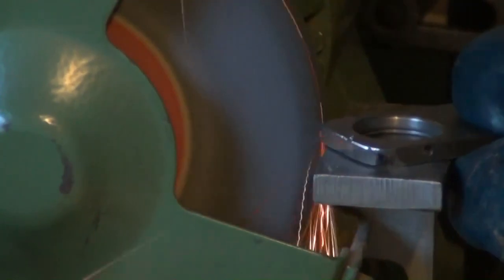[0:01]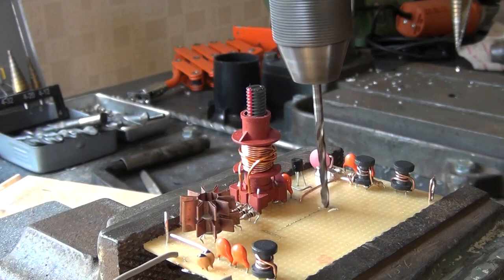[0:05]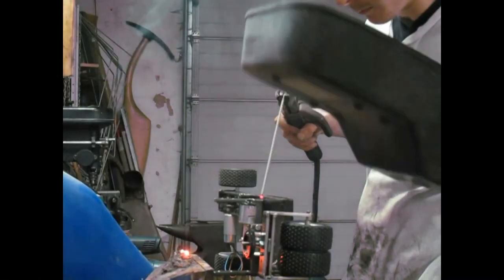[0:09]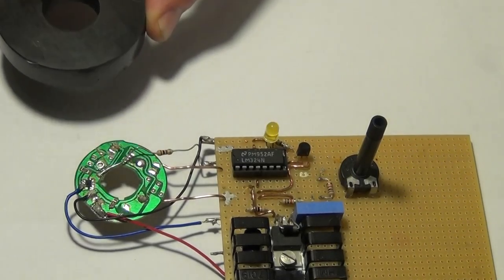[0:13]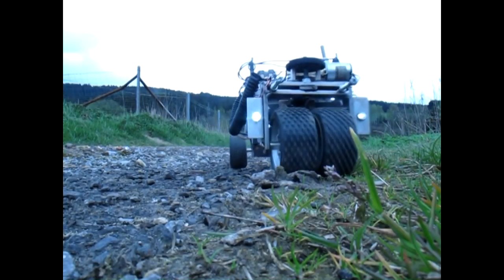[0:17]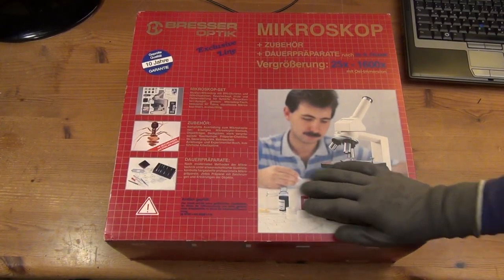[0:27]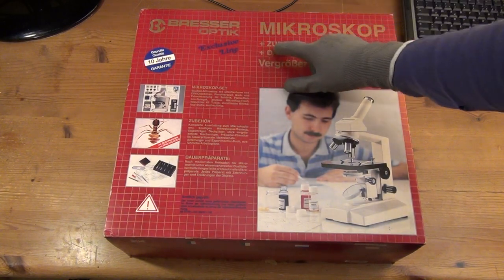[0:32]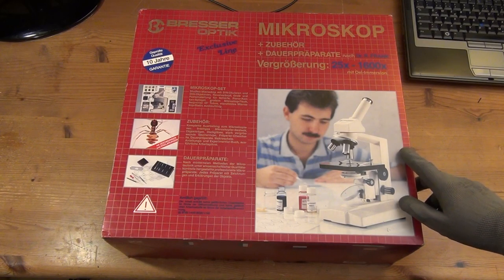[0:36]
Hello friends. Today's episode is another proof of concept video involving the Raspberry Pi. Now, what is it about? Well, many of you sure know these USB microscopes here that are very cheap by now, but are often very poorly made and often deliver low resolution, low quality video material.
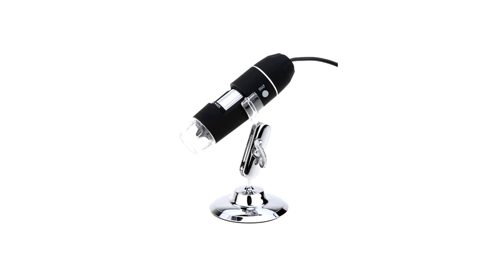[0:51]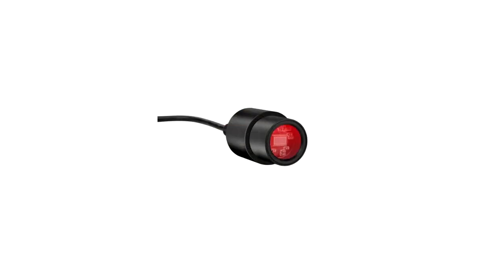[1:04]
On the other hand, there are also so-called digital microscopes, which already come with a camera and even a display. Also, by now, professional microscope manufacturers offer these modules here that can be used instead of a classical eyepiece with older microscopes, basically upgrading them to a digital microscope and delivering HD video quality, as you will see later in this video.
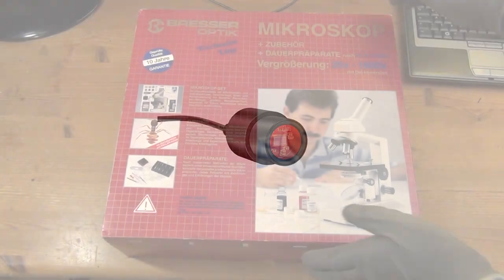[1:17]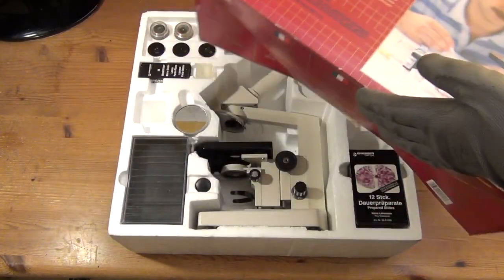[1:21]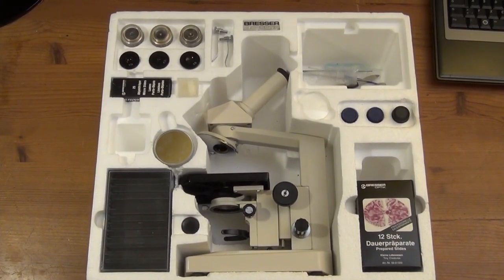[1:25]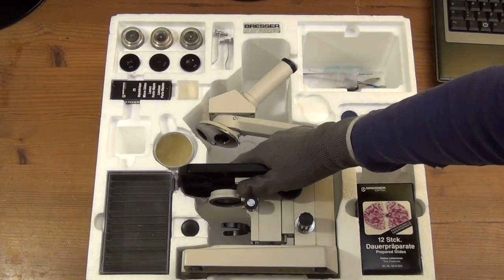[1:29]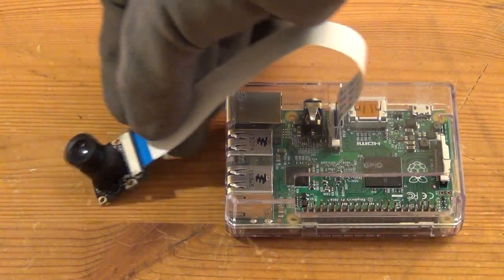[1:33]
So in this video, I'm attempting a DIY approach to this whole topic, buying a microscope for very little money that has a reasonable build quality though, and upgrading that to a digital microscope by using a Raspberry Pi computer and a camera module that was specifically designed and is sold as a peripheral device for the Raspberry Pi.
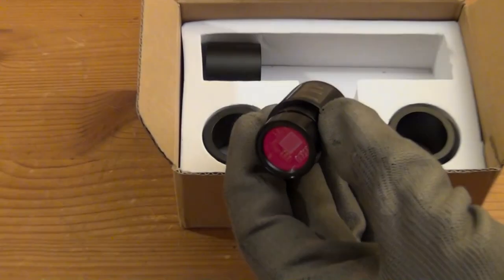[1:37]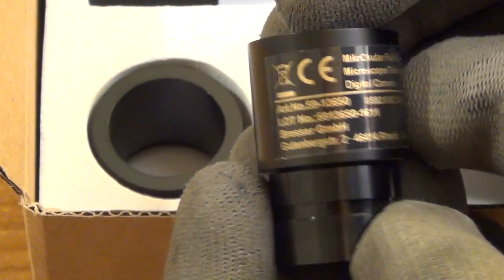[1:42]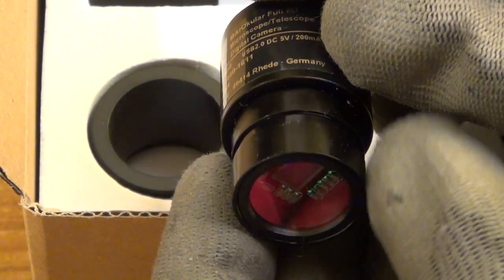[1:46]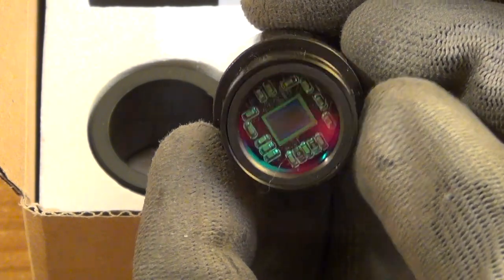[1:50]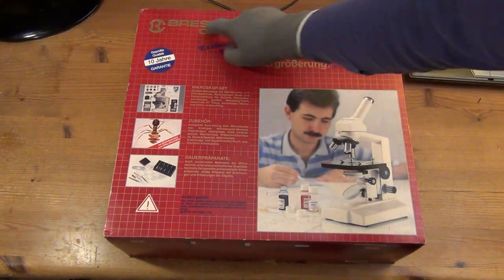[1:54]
And in order to allow for a direct comparison between this self-made approach and a commercial solution, I have also ordered one of these eyepiece USB cameras here, and we will take a look at the actual footage later in this video. But first, let us take a brief look at the actual microscope that I bought for this video.
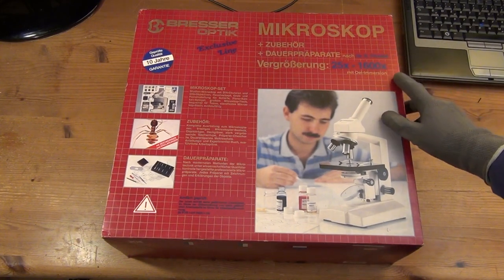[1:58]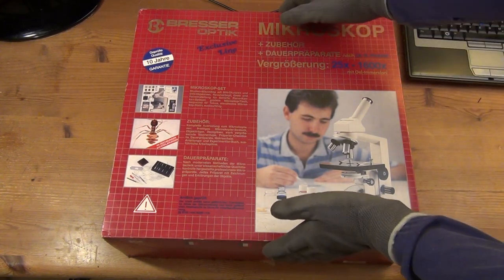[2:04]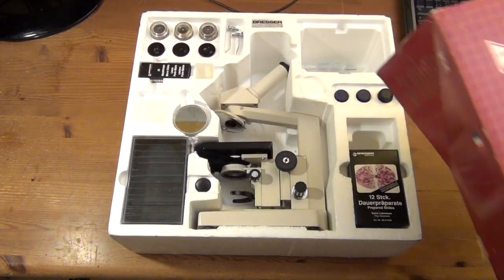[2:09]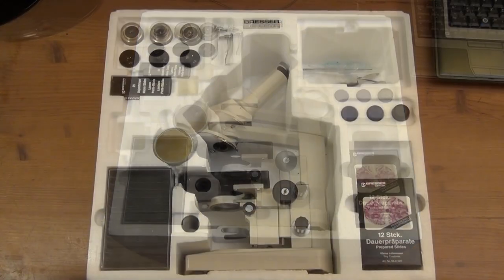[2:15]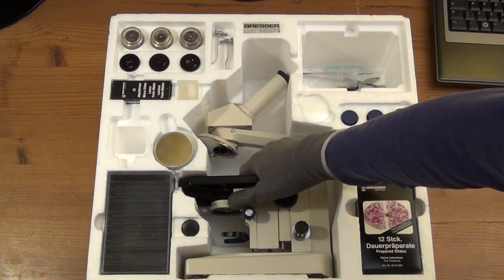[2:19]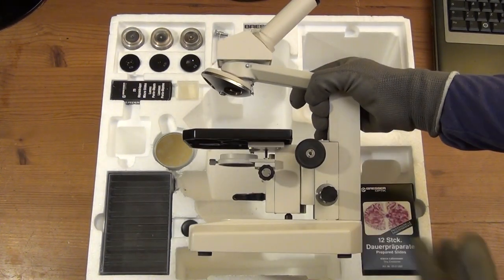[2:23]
So, I got this entire set here for only 5 euros just the other day here in Cologne. And, well, you might pay up to 50 euros for something like this. And I guess that this microscope, which was manufactured by the German company Bresser, might be from around the early 1990s. And I guess that it would have cost something around 150 euros in today's money, that is, back in that time.
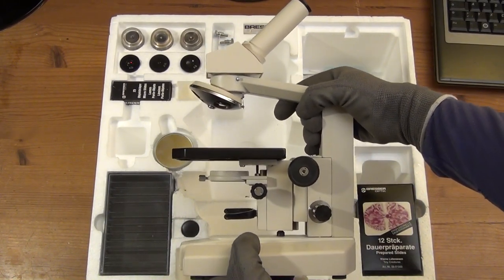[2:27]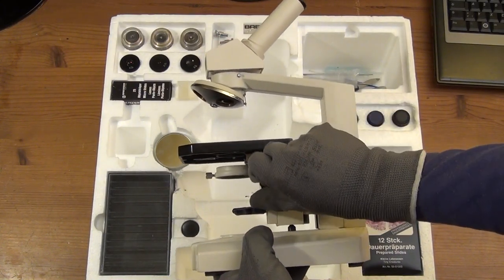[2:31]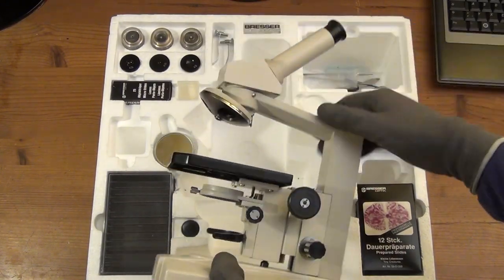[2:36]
But even if you're not as lucky as I am with these kind of deals, I guess you can get an older microscope for around 20 euros at basically any time. And if you're a little patient, you might get it as cheap as just a few bucks.
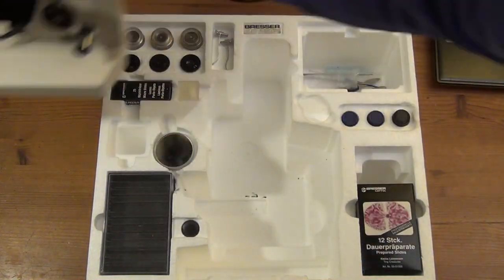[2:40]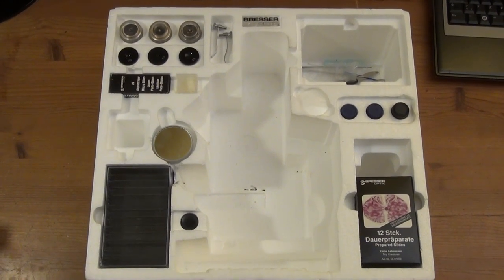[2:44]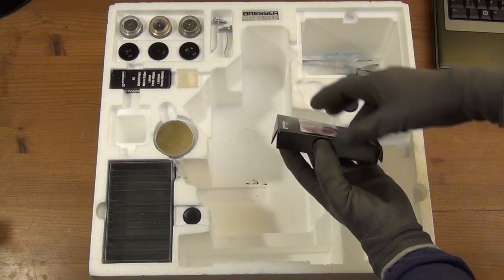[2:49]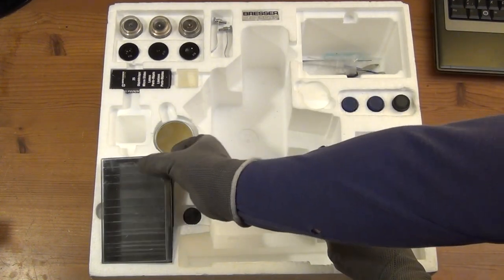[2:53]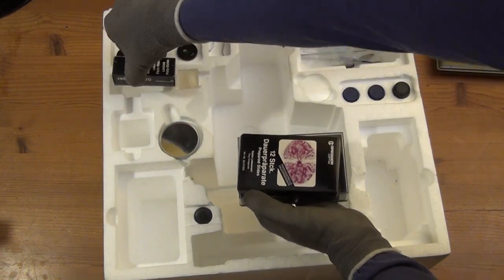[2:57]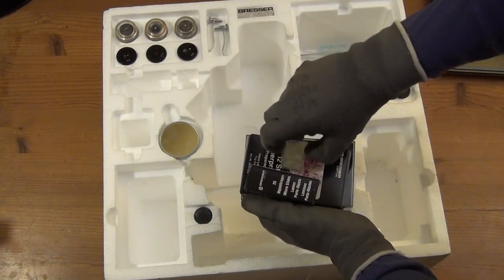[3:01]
And as you can see, this set came not just with the basic microscope frame and some of the optical components, but also some pre-prepared slides with specimens on them, and also all the components for new slides so that you could make your own specimens. But we're not going to focus here on biology or anything like that. You can use a microscope like this just as well for taking a look at microelectronics, for example.
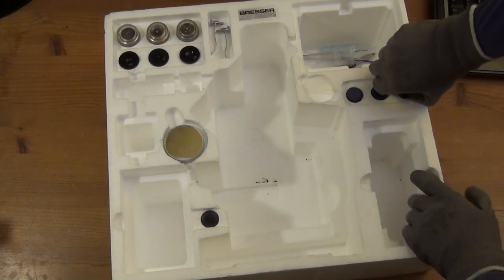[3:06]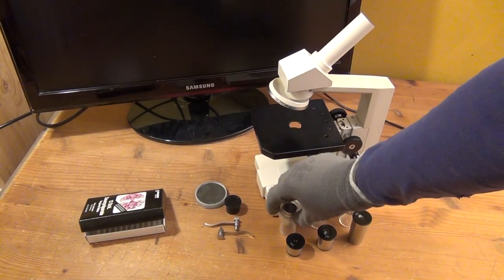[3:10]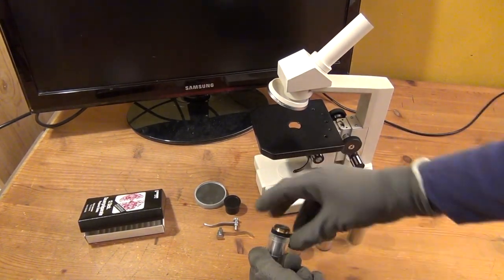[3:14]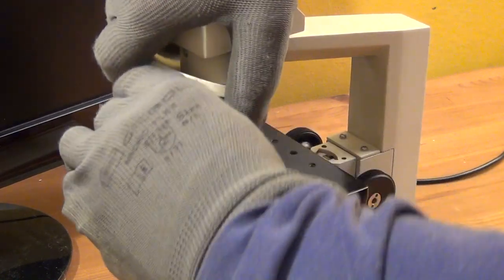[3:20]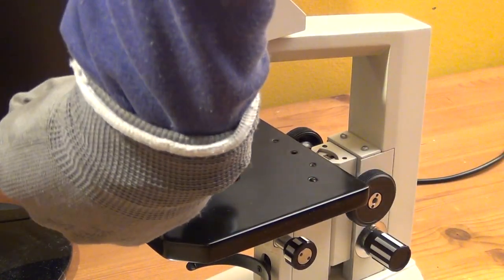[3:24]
The microscope set comes with 3 different objectives or objective lenses, in German Objektive, which are stored in these small transparent plastic tubes here, and then they are attached to the so-called objective turret, in German Revolver. And of course, these 3 objectives have different sizes and different factors of magnification.
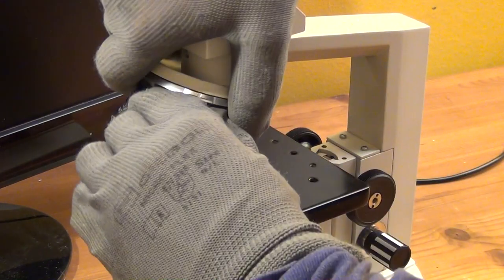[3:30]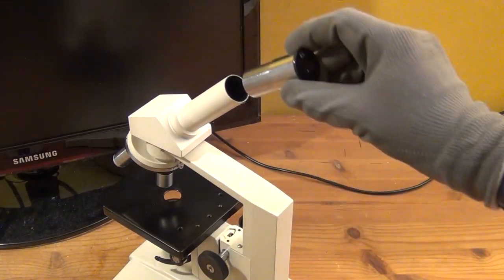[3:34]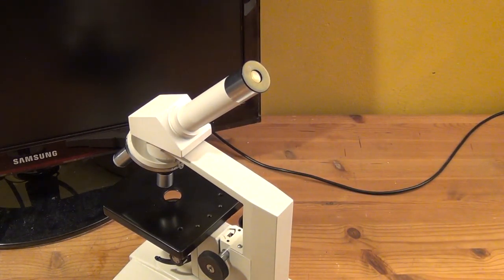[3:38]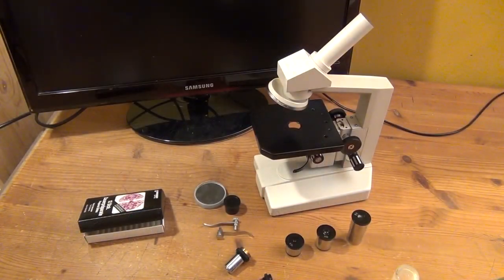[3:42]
On top of the microscope, I remove this black dust cap here and insert an eyepiece, in German called Okular. And there are again 3 eyepieces with 3 different factors of magnification. And if you want to have the total magnification, you have to multiply the 2 factors of the objective lenses and of the eyepiece, of course.
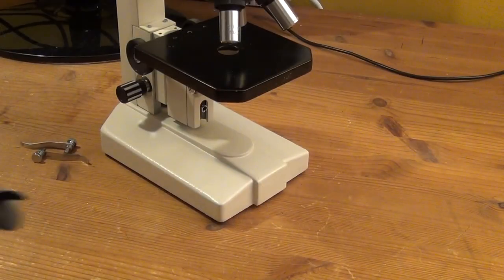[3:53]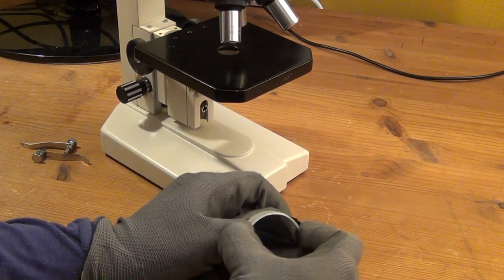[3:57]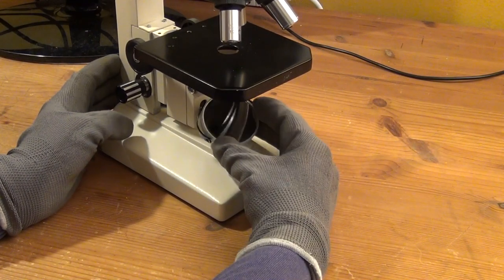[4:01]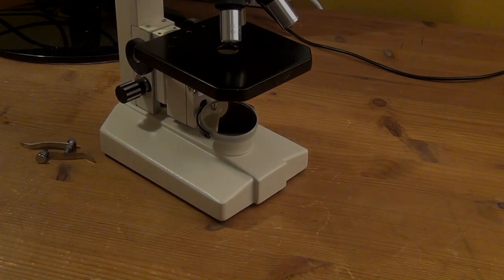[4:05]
At the bottom of the microscope, you typically find some kind of illuminating system. In this case, it is just a mirror. And in the future, I guess I will have to upgrade this by adding some kind of LED system to this, because this is really the most basic and a very unsatisfying type of illumination.
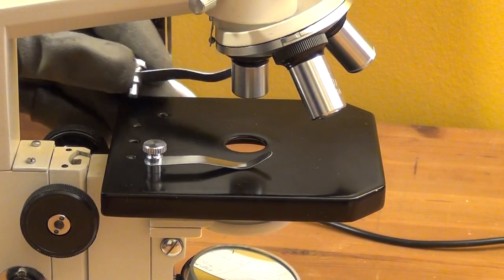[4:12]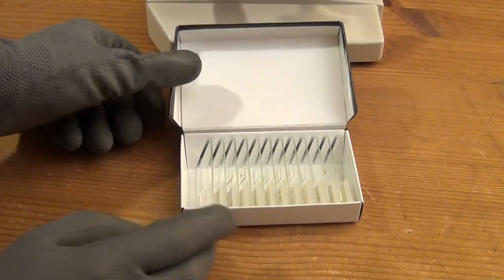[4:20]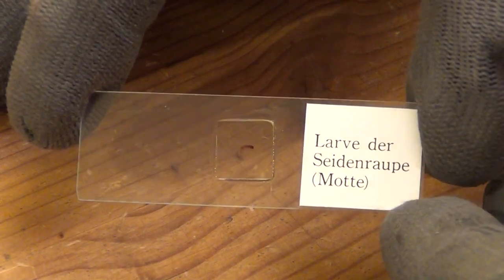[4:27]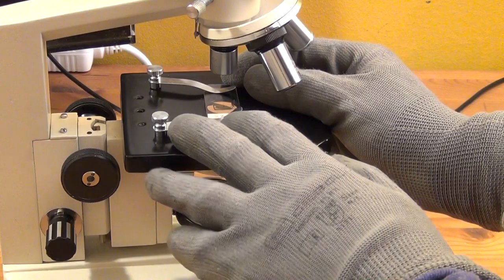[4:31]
On this black so-called stage here, Objektisch in German, these slide clamps are inserted. And then we open this box here with our pre-prepared slides, and we pick a specimen, in this case the larva of the silkworm, and we put that onto the stage and clamp it down with the slide clamps.
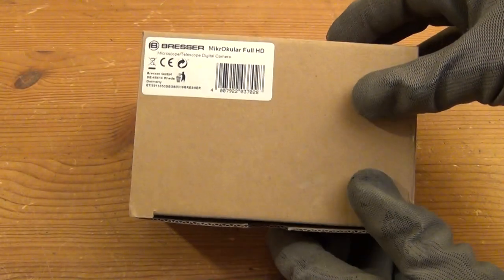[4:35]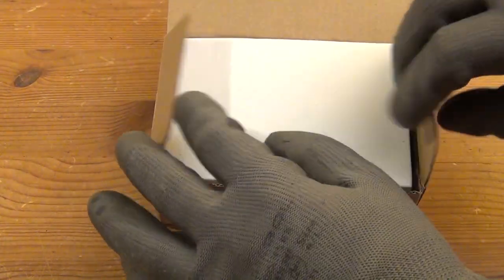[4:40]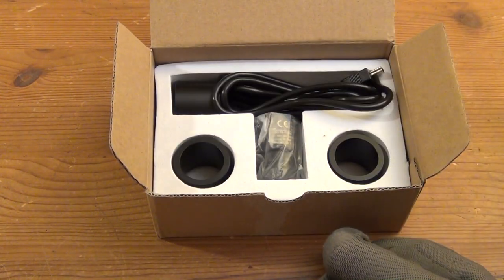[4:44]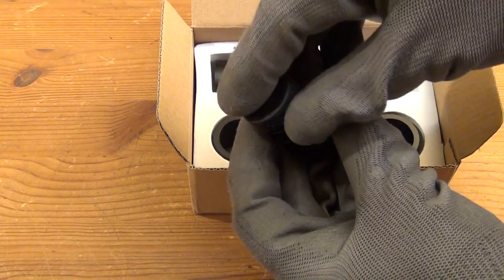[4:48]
And I have now ordered this microscope USB camera module here, which was also manufactured by Bresser, the same company that actually made the microscope back in the 90s. And I paid 60 euros for this. And I will now set this up and show you some footage.
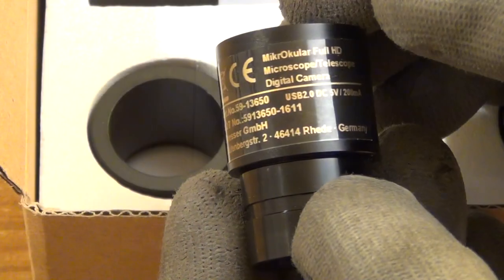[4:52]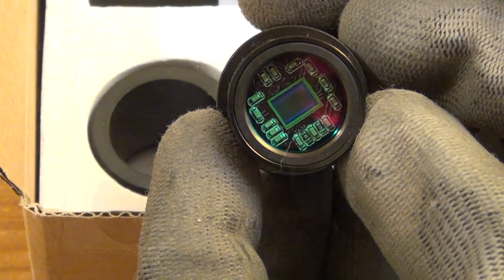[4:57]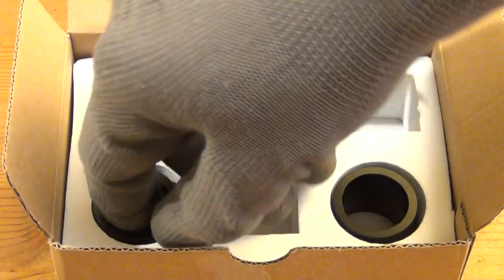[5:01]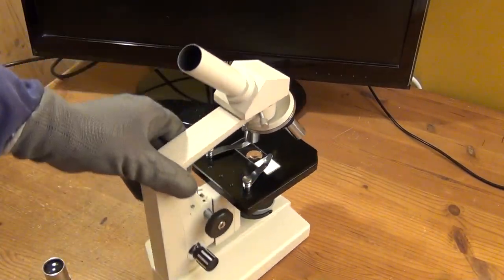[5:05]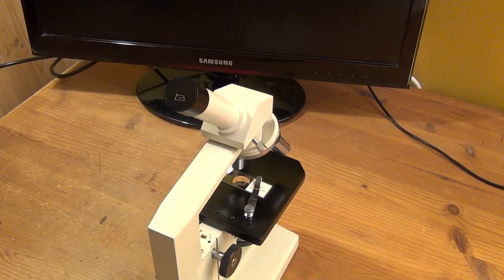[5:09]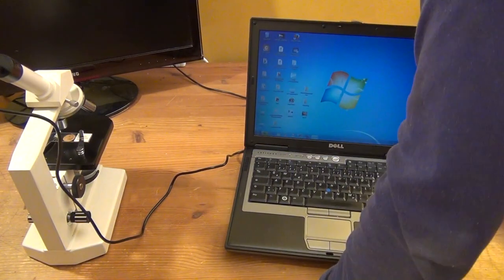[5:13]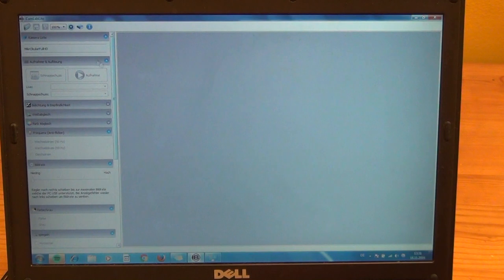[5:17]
As you can see, this set also comes with 3 different adapter pieces that can be used to fit this module onto differently sized eyepiece tubes. And the eyepiece is removed and the USB camera module is inserted, and then it is simply connected via USB to this laptop here. With that set came a software called CamLab Lite, and you can see that right here.
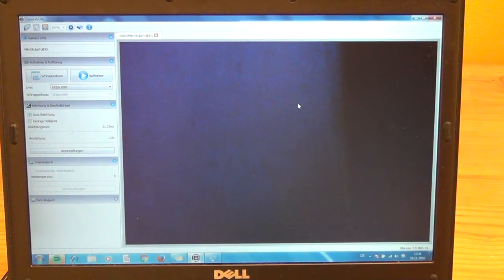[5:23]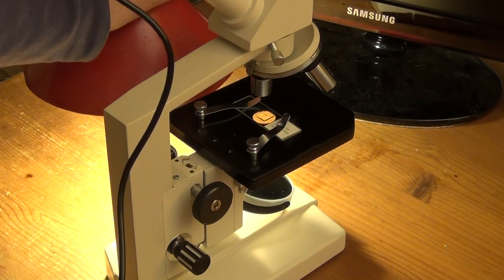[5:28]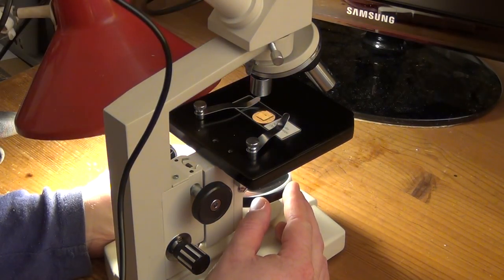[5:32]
It can be used for either still pictures or HD video recordings. And because I have no real illumination system, I use one of the lamps on my workbench and rearrange the mirror so that light is shining through the slide. And now I'm actually starting a recording while I try to rearrange the lights until I get an optimal picture. And now let's take a look at the actual recording that I took from that camera.
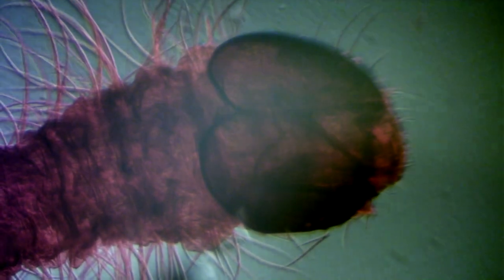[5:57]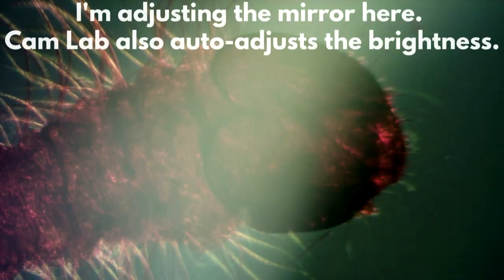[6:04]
And here we can already see a lot of tiny scratch marks and imperfections on the surface of the glass slide. And here we have found our silkworm. And you can recognize pretty distinctly a lot of the different body parts of the larva. But there are obvious problems with this really improvised illumination system.
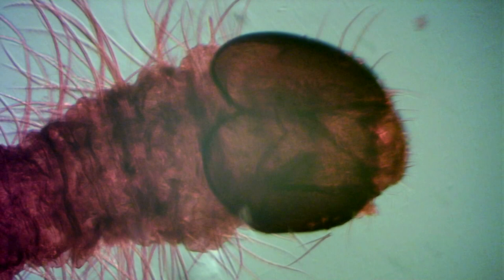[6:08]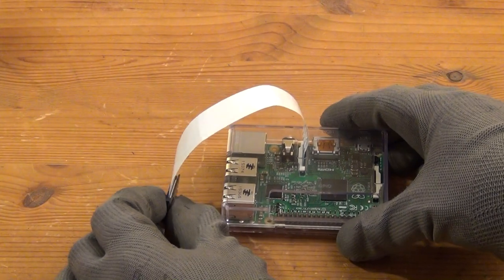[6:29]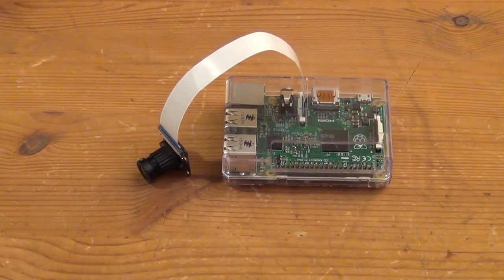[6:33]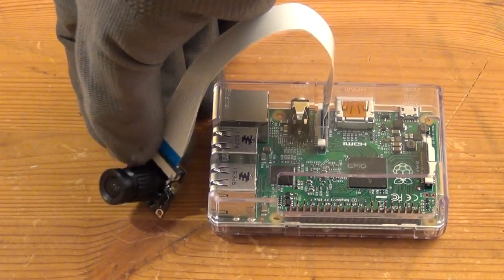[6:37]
I guess that a portion of the ambient light is reflected on the top surface of the slide rather than shining through it. Then there's also some color issue and a little bit of flicker. But I guess a lot of this could be fixed by simply cleaning all the optical systems and having an actual illumination system. Okay, so the circumstances are really improvised and bad, but they will be the same for both of our setups, so I guess the comparison will still be fair.
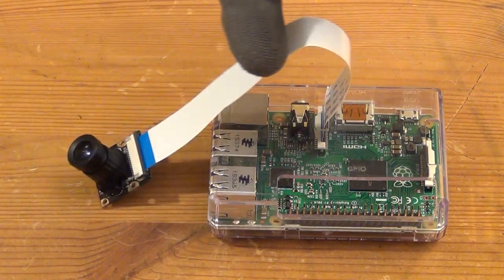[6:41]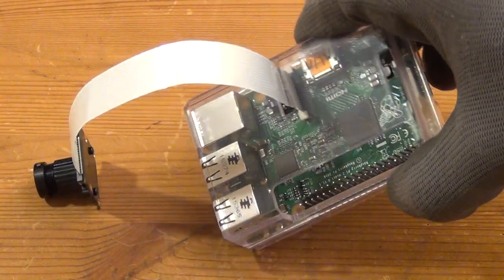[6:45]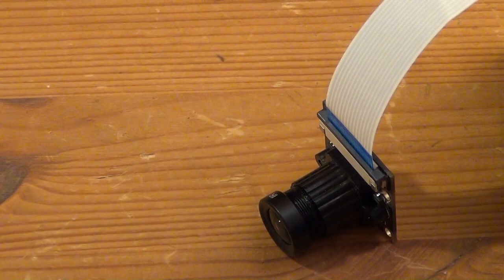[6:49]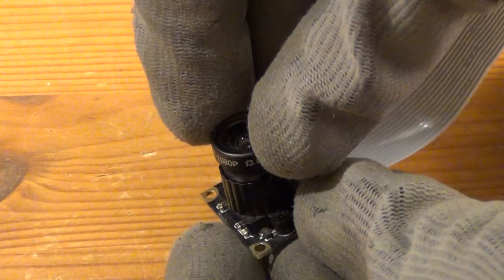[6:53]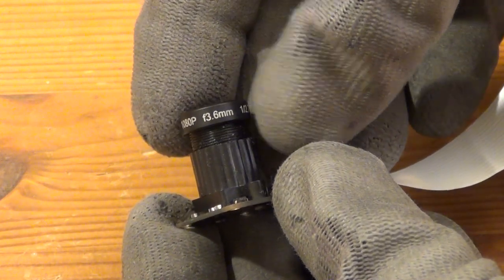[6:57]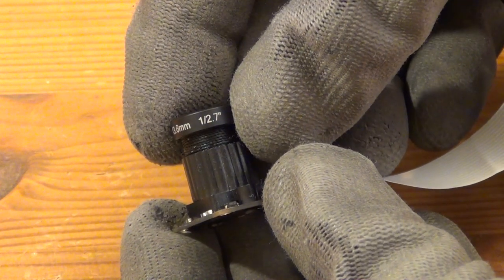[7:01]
And here I have my Raspberry Pi 2 Model B board inside a transparent plastic enclosure that I bought for it a couple of months ago, and connected to it is a 5 megapixels camera module. It is connected via a flat flex cable to the camera slot on the board itself. And that camera is a third party model which costs around 20 to 25 euros at this point in Germany.
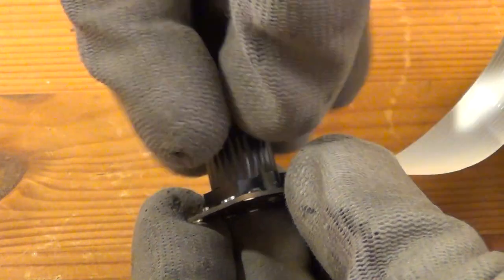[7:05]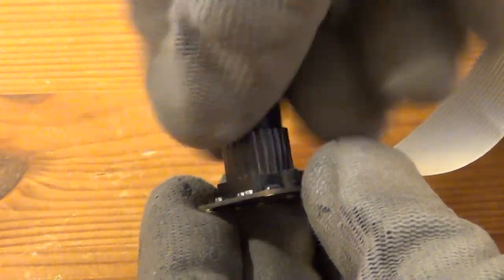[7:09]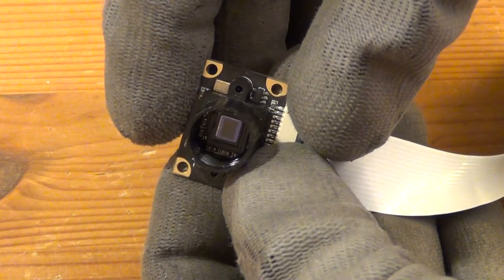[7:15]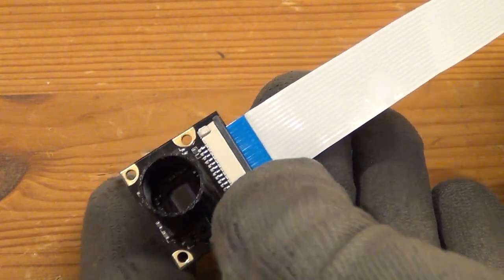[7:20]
And I will put a link to that in the video description. I, however, do not know if this exact model is available anywhere else in the world. But you don't have to pick this exact model to do it. I'm sure though that there are a lot of similar products available online in other countries as well.
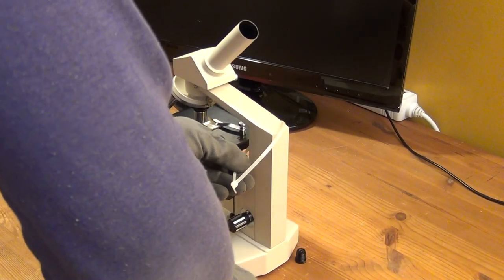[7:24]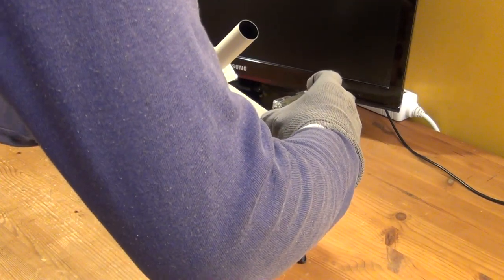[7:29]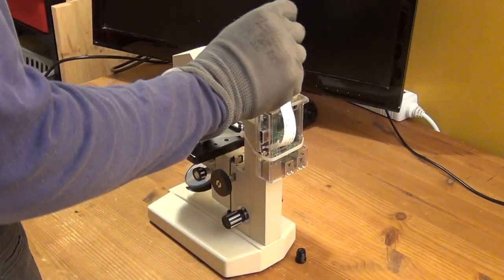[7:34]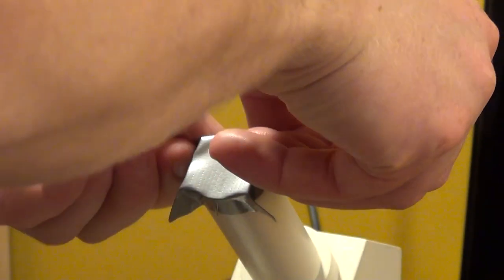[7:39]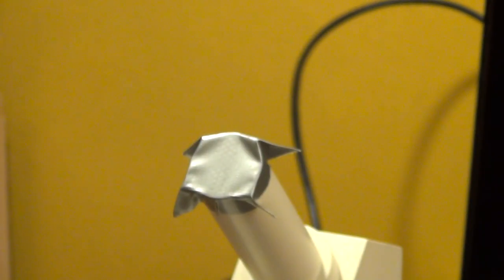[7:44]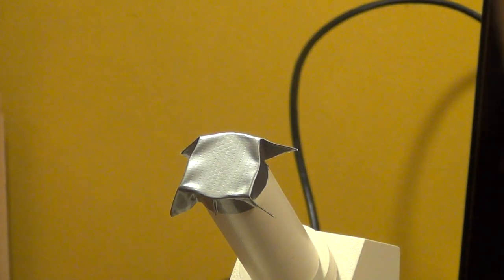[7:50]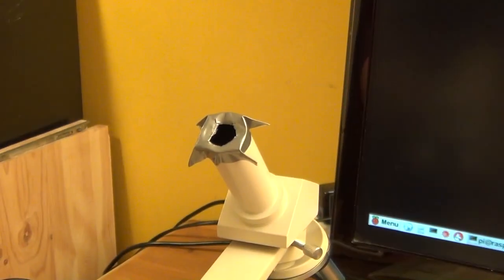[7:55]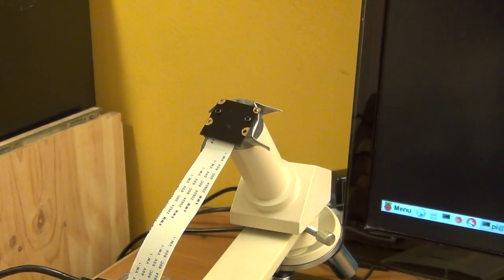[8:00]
Since this is just a proof of concept video, everything you see here is quite improvised. And so I attach the enclosure of the Raspberry Pi to the microscope frame with a simple zip tie. Next, I use some duct tape and put that onto the end of the eyepiece tube in order to have some electrical insulation between the metal surface of that cutoff tube and the PCB of the camera module. And I cut a hole into that so that that threaded black plastic tube that is bolted to the PCB of the camera module can be put onto the eyepiece tube temporarily.
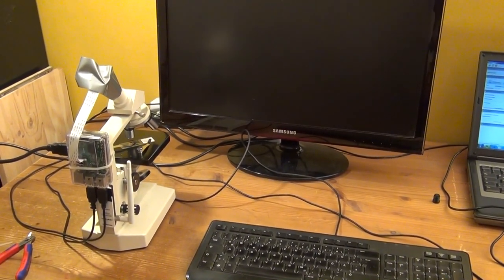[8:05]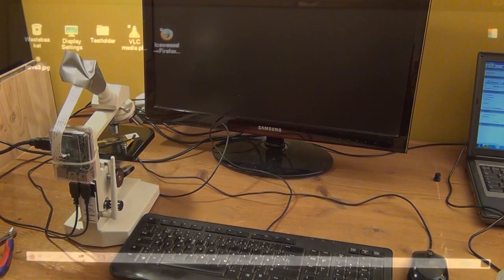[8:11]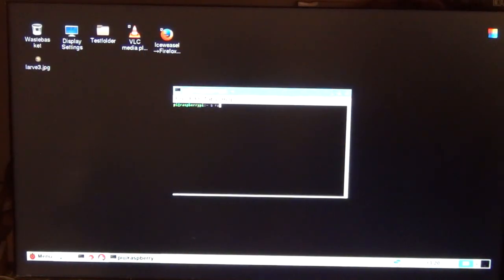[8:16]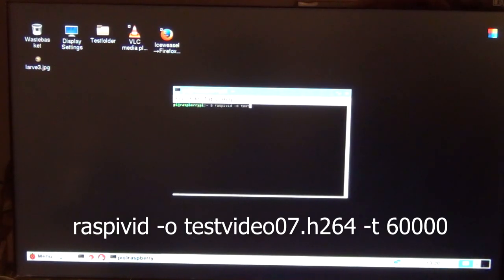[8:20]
In the meanwhile, I have set up the Raspberry Pi with a display, keyboard, mouse, and a Wi-Fi stick. And I start up the Raspberry Pi, and now we can make our first experimental video recording. And then I type in the command raspivid -o test video 07.h264 -t 60000. And that means raspivid, record video with the PiCam, -o, output file name, which is then followed by test video 07.
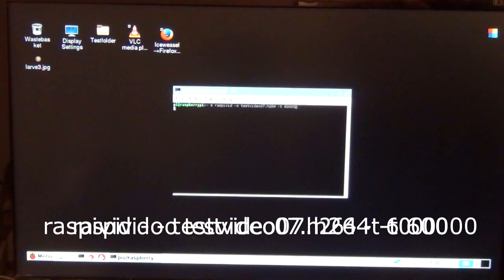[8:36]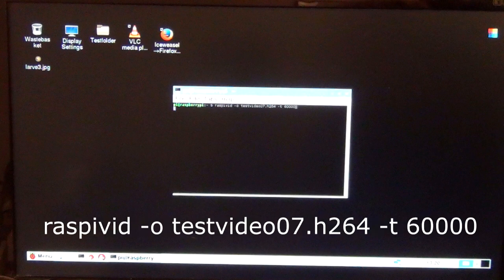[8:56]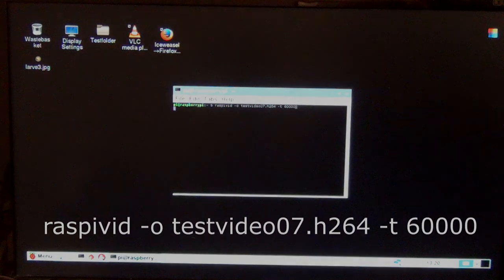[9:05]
.h264 is the name of the video codec used, -t, time 60,000 milliseconds. So this command means use the PiCam to record a 1 minute long video and name that output file test video 07.h264. And once you hit enter, that command will be executed instantaneously and a preview of what you film will pop up on the screen. So let's just take a look at the actual recording that I grabbed from the Raspberry Pi camera.
Now, here we again see details of the imperfections on the surface of the slide, and I'm looking for our silkworm here, and I'm adjusting the focus on the microscope manually. And here we have something that looks like the glue that was used on the slide, and I'm still looking, we're still a little off, but we eventually find our silkworm and we can see a lot of details here. It looks a little different than before.
We also have what seems to be an interference on the screen that I think is generated by the high frequency flickering of my LED lights here. But this is enough for me to say that we have a proof of concept here. From here on out, this video will be about some basic improvements on this concept.
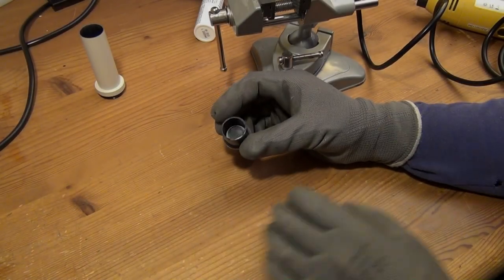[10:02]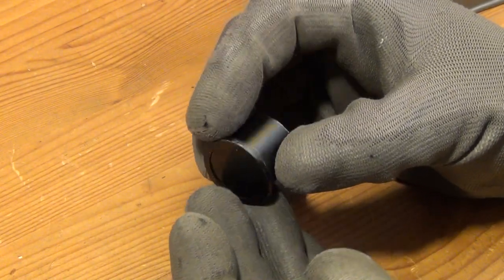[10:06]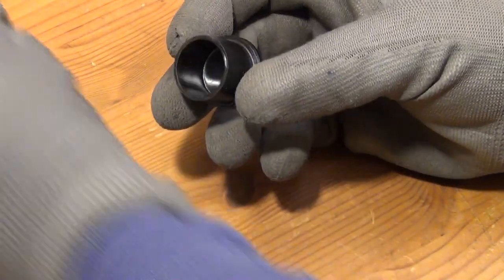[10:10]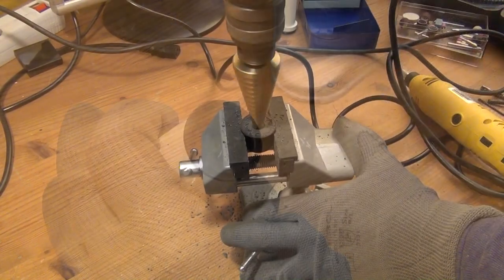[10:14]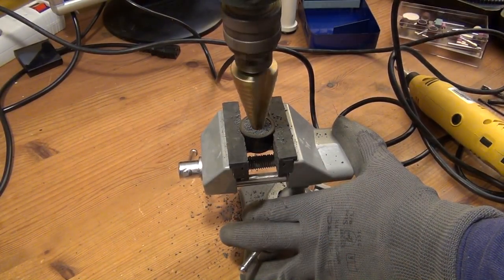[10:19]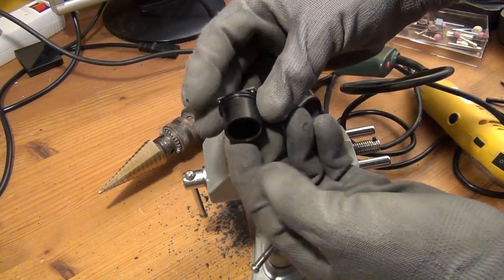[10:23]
So first I want to get rid of this completely improvised situation here where the camera module is just glued to the eyepiece tube with duct tape. So what I'm doing is to use this old dust cap here that you might remember from earlier in the video. And what I'm doing is to simply drill a hole into that so that I can just insert the plastic part that is already sitting on the PCB into this dust cap.
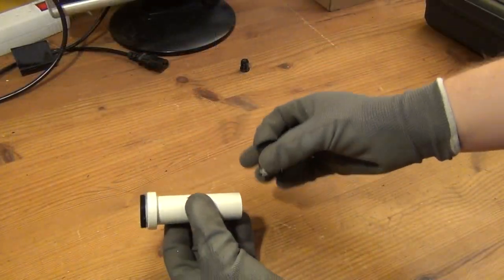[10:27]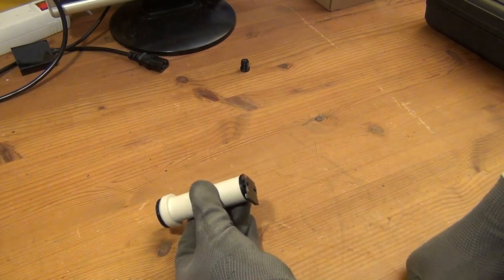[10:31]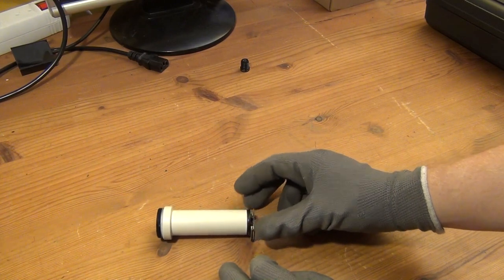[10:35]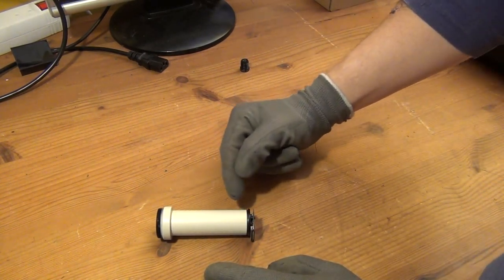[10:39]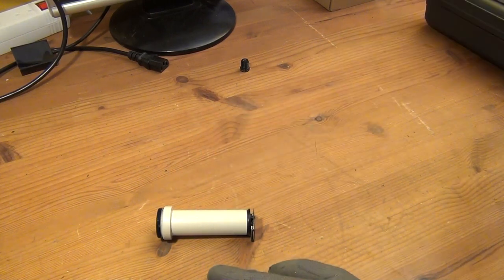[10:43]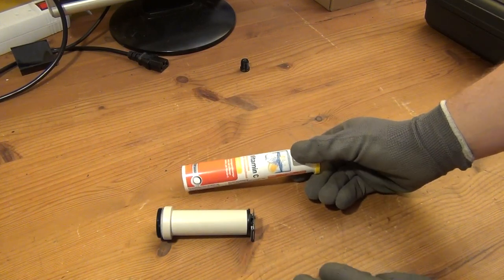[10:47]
And at this moment, I'm keeping this threaded plastic part that sits on the PCB because I do not want to destroy the original mechanism of this Pi camera, because maybe I want to use it for other purposes in the future. But this is not everything. I also want to improvise a shorter eyepiece tube, and I will do that by using this used tube here that held vitamin C pills before.
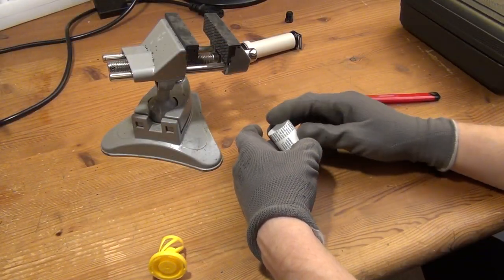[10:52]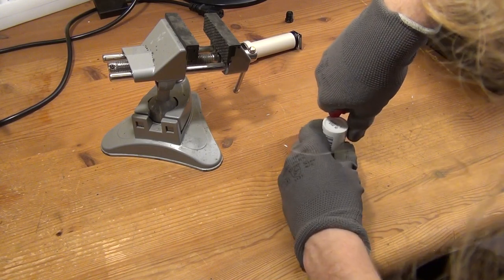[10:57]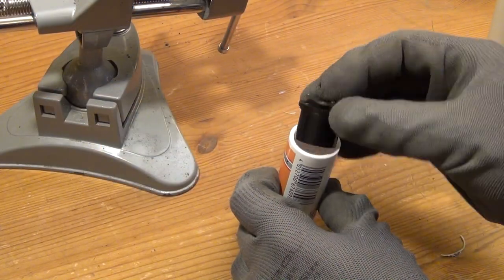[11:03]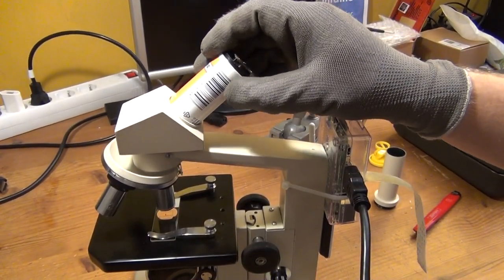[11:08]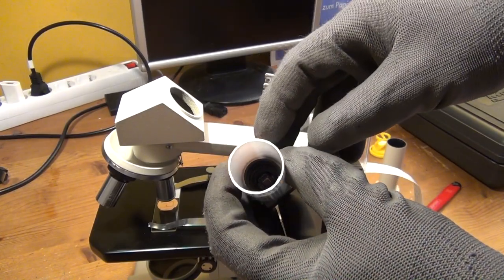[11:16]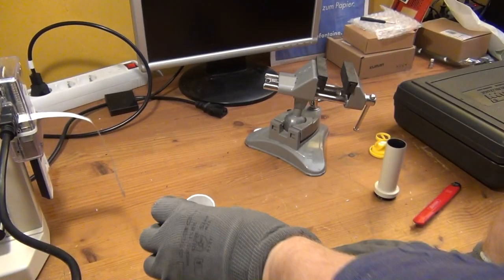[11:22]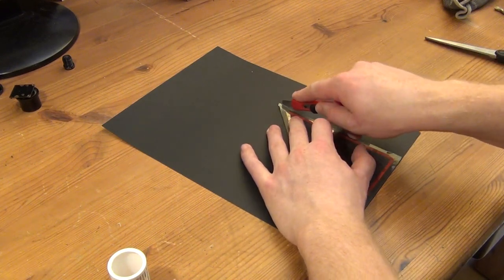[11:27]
And I will gradually shorten that and see if I can enhance the picture detail, because as you have seen before, this Bresser USB camera module actually has a larger CMOS chip and it is sitting deeper inside the eyepiece tube. And I think that I can counter that by shortening down the eyepiece tube. But that vitamin C plastic tube is white inside, and that is not good. That's why I just bought a sheet of black cardboard for a couple of cents, cut out a piece, and insert that inside the plastic tube to make it black.
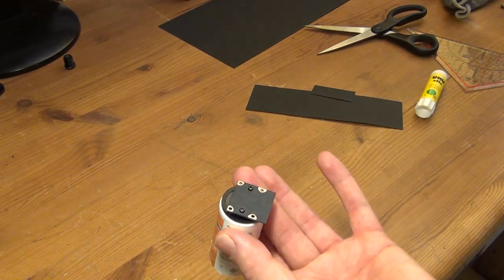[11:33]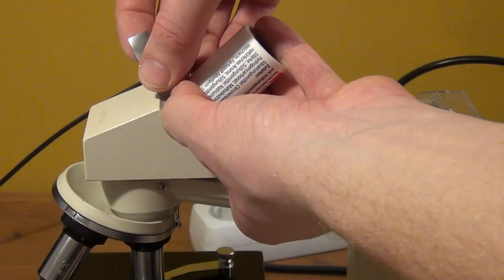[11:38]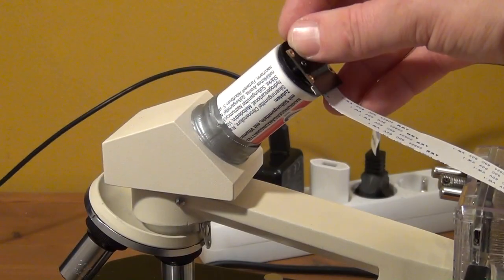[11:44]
Now I make a little spacer from another piece of cardboard, and I temporarily attach that new eyepiece tube to the microscope, and let's see if we are seeing any improvements here. And the picture obviously looks somewhat different. I can't really tell if we're already having a really larger picture detail here, but you can clearly see that I have introduced some dirt into the optical system. That's small filings or snippets of the plastic that I ground off when I cut and ground the plastic tube, so that has to go out. But I think that I should try to shorten the tube even more.
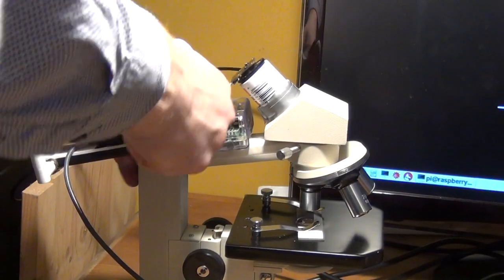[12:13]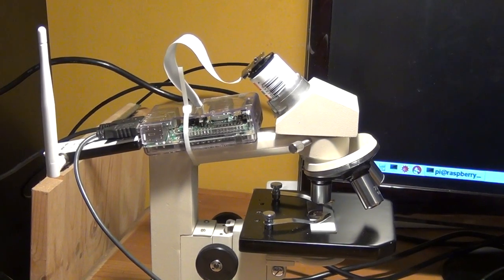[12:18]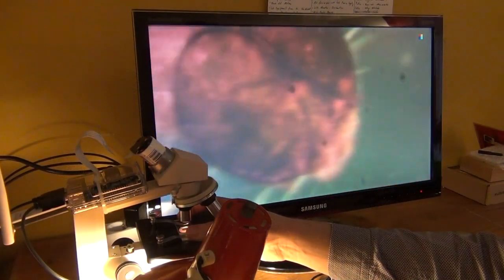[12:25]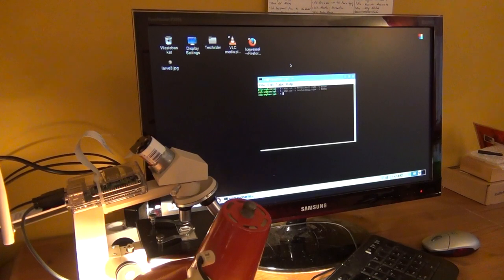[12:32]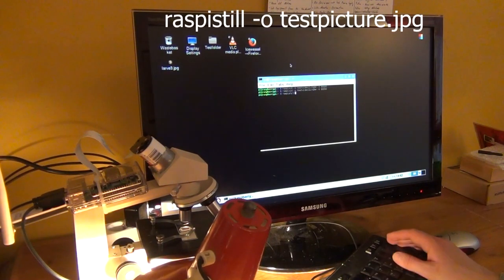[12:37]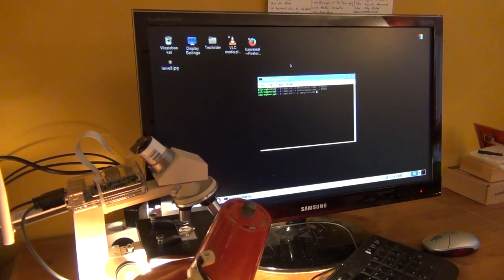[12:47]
And that's exactly what I have done now, and I also rearranged the enclosure of the Raspberry Pi cam because of the limitations of the length of the flat flex cable. And here you can see me recording again and taking pictures. And while we're at it, let me show you how you take still pictures with a Pi cam. It is fairly easy. You just type in the command raspistill for a still picture, and then again -o output file name, and then for example test picture .jpg for a JPEG file. And that is exactly what I'm doing right here.
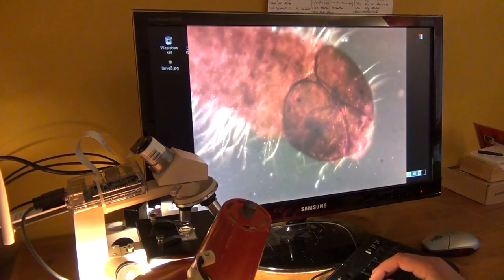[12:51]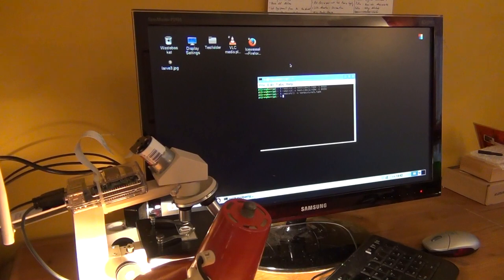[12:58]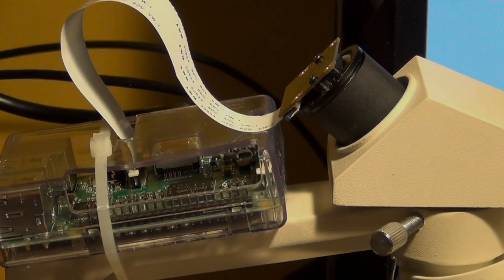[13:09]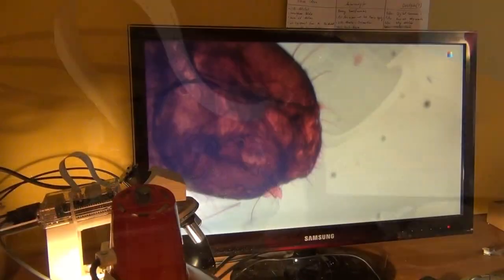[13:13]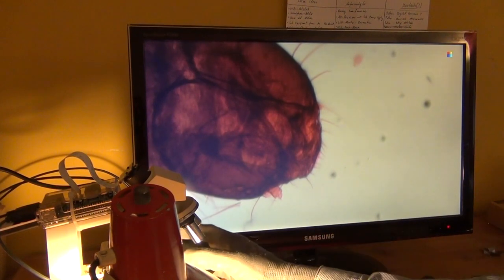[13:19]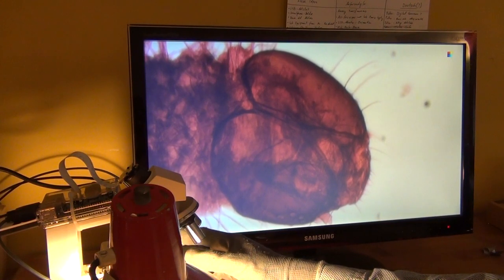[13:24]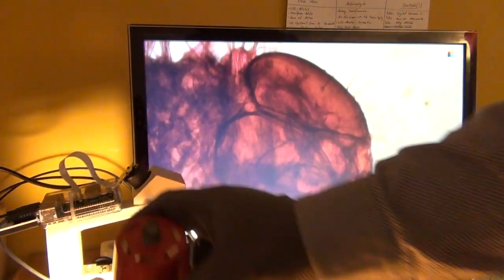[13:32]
And what you can also already see here is that if you take a still picture, a larger section of the photographed object is actually to be seen on the output file rather than when you record a video. But we'll take a closer look at that in just a second and compare different pictures and videos. And I shortened the eyepiece tube even a little more. This time I removed the plastic tube altogether and only used a small ring of black cardboard to block out light. And now let's just compare some photographs and video footage taken with first the original tube, then the shortened eyepiece tube, and at last the super short eyepiece tube.
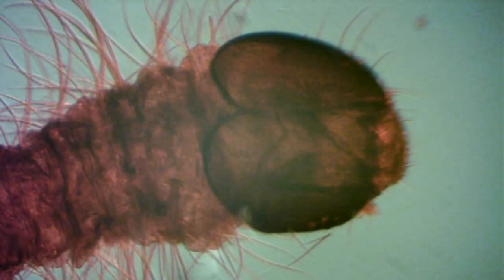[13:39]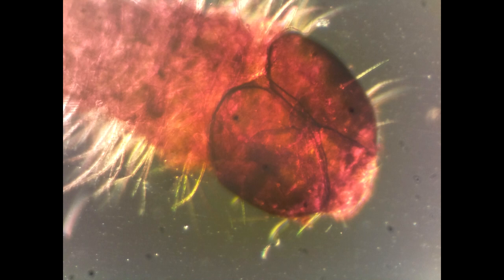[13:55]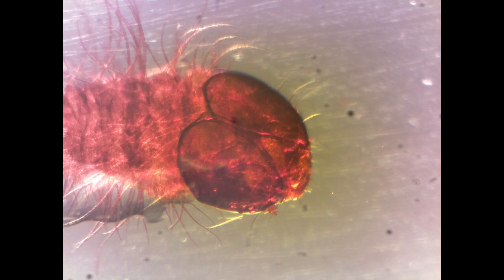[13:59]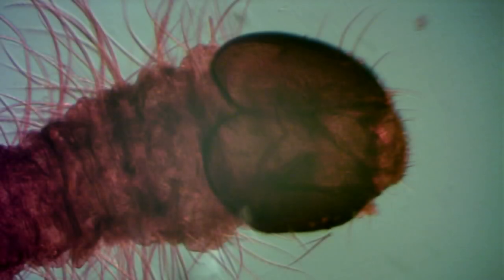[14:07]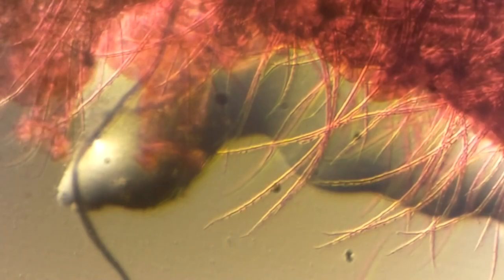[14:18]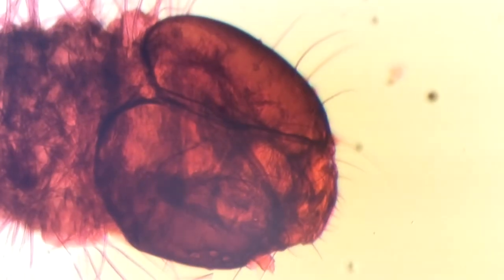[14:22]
So this first picture here was taken with the commercial Bresser Microcular USB camera module. Here we have a picture taken with that third-party PiCam and the original eyepiece tube. Here a picture taken with the shortened self-made eyepiece tube, and here one taken with the super short self-made eyepiece tube. And likewise here some footage, first from the commercial Bresser unit from the very beginning of this video, and here in comparison some video material from the shortened tube setup and from the super short eyepiece tube setup.
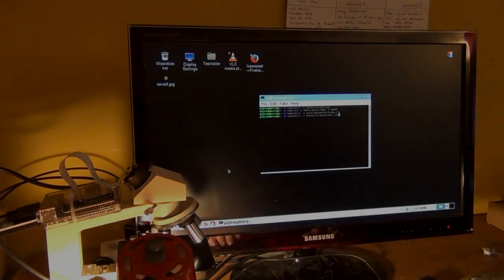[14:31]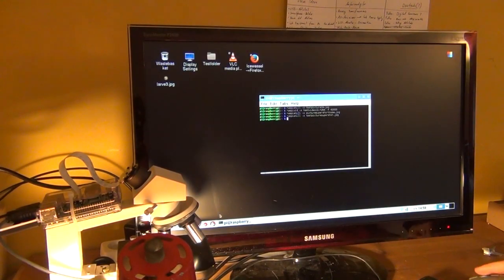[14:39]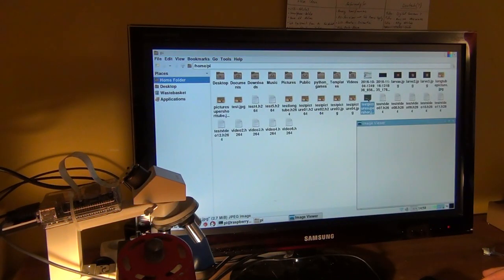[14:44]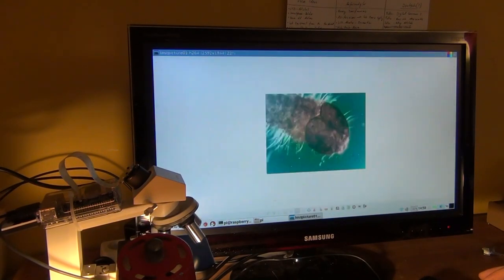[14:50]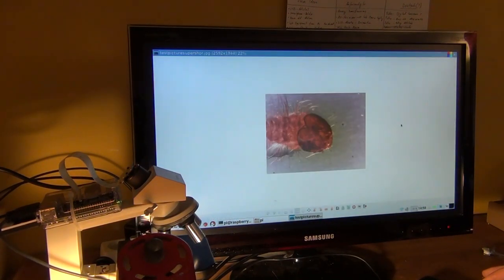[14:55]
So even though there is still much room for improvement, of course, I think that this idea is feasible, and I recommend you to experiment with that yourself because it's really not all that expensive to do and can be an interesting way to learn more about these Raspberry Pi cameras, for example. But there's one more thing that I want to talk about briefly, and that is that if you remember, the output file format of the raspivid command was the H.264 format, and that is a video file format that cannot typically be played by most video players or used by most editing programs.
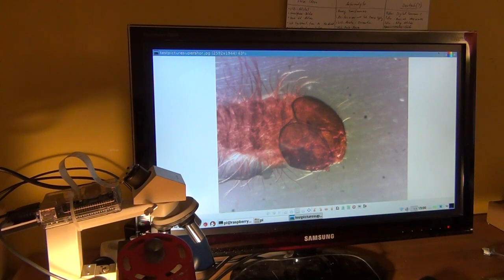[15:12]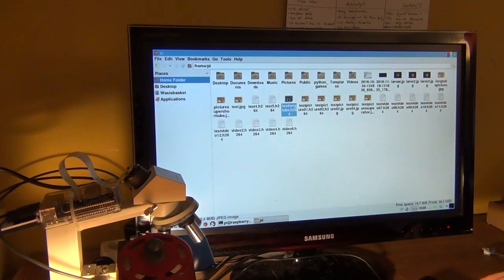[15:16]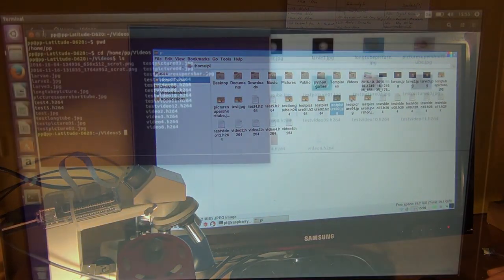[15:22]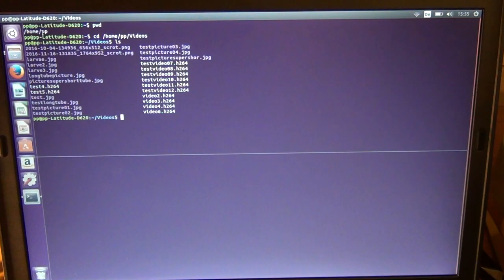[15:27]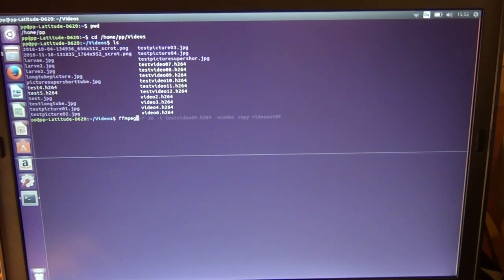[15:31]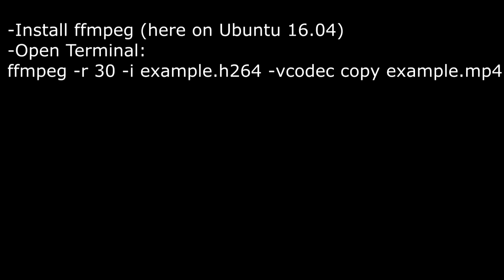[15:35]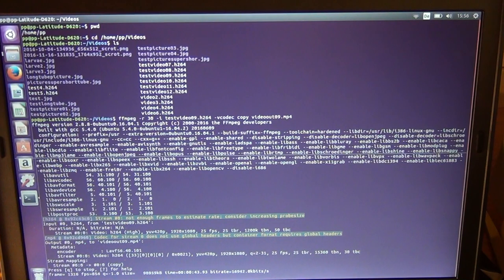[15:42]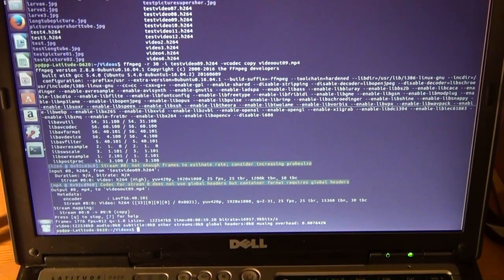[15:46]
And I myself wasted a huge amount of time looking for freeware conversion programs that run on Windows for this. And what I ended up doing is to use ffmpeg on Linux. So what you should do is to use either your Raspberry Pi or another computer with Linux on it, install ffmpeg and use that to convert H.264 files to MP4. I myself did it on one of the laptops that were given to me by a viewer a couple of months ago, and that is because ffmpeg is not readily available for some releases of the Raspbian operating system.
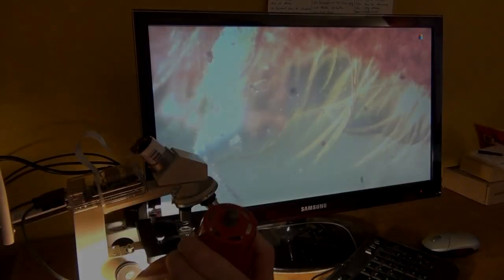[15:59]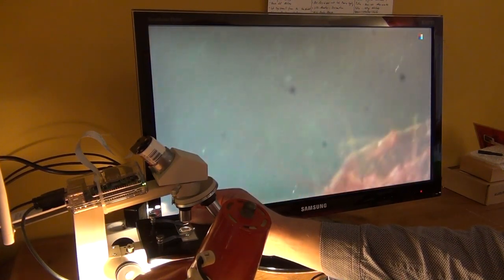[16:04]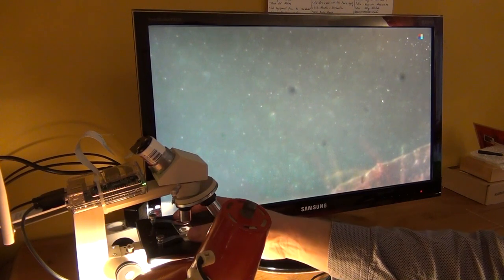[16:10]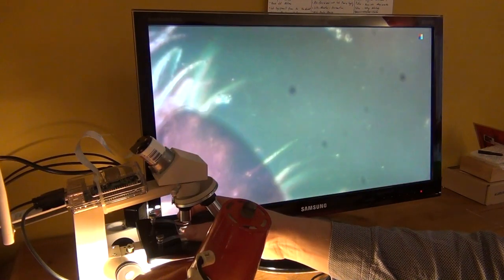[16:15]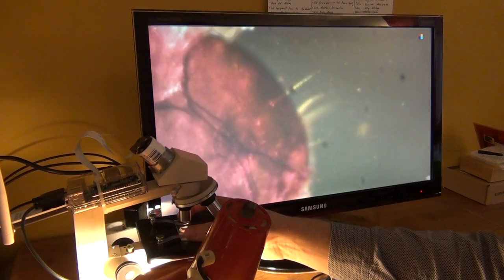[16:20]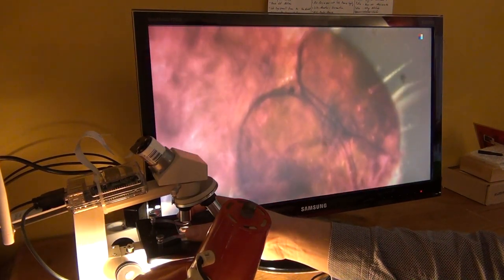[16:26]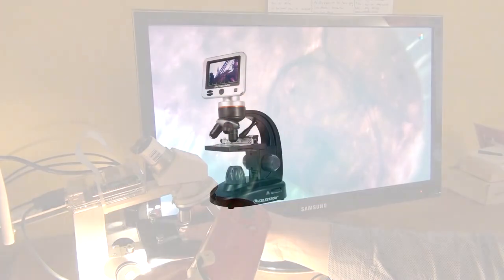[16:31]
Okay guys, so that was today's episode, and if there is a lot of interest from your side, then I might proceed in the future to improve this idea further by, for example, adding lights on the bottom of the frame and maybe also on top, so that you can not only use slides but, for example, take pictures of microelectronics where light is shining on the PCB from above. Maybe it would also be possible to experiment with a display for the Raspberry Pi and build something like a real standalone digital microscope similar to what I have shown you in the very beginning of the video.